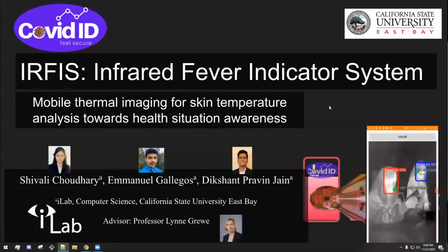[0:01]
Today, I am happy to present our findings into the use of mobile thermal imaging for skin temperature analysis. In developing the infrared fever indication system, researchers Shivali Choudhary, Emmanuel Gallegos, and Dikshant Jain, led by Professor Lynne Grewe from iLab at CSU East Bay, have developed a new tool for smartphone users to increase their situation awareness with respect to COVID-19. Before we jump into a demonstration, down below in the lower right corner, you can see an example of our system in action.
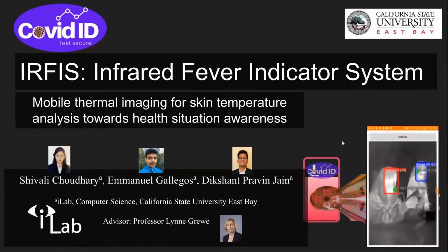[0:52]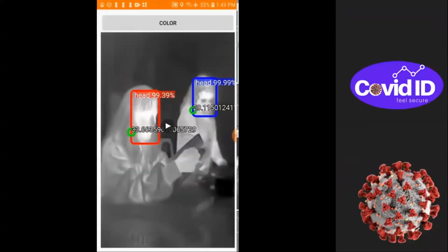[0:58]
The basic idea is to use a small infrared camera attached to the user's smartphone, which captures a live stream of infrared video, allowing our system to extract the head regions of any individuals in the frame using machine learning techniques and display the live temperature readings to the user to see if any individuals from within the frame are displaying signs of fever, one of the primary symptoms of COVID-19. This system has been integrated into the COVID ID Android application. Let's see it in action.
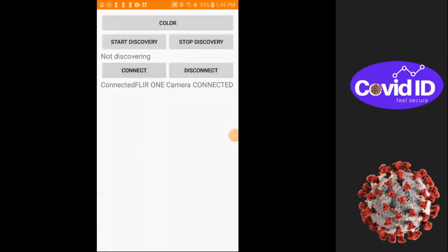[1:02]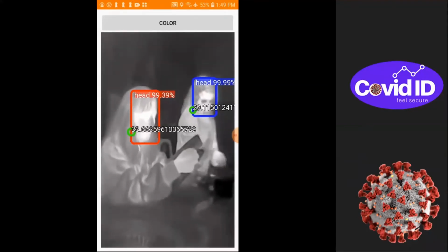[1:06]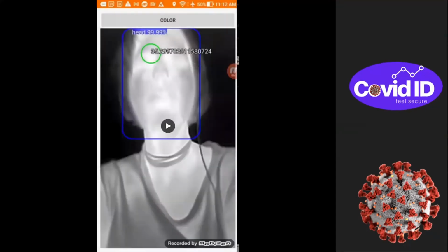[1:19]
In this first demonstration, we can see a live screen recording of the infrared fever indication system at work from the COVID ID application. The machine learning-based head detector model is determining where the head regions are, and the temperature analysis subsystem is extracting the highest temperatures found in each head region. Taking a look at another demonstration.
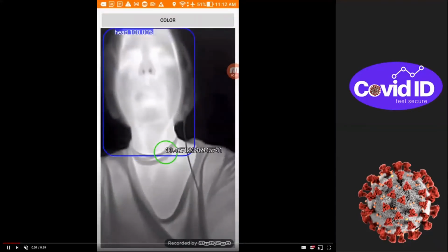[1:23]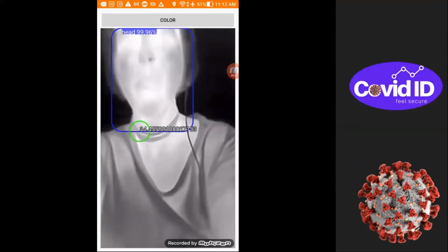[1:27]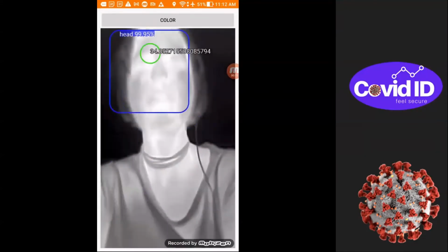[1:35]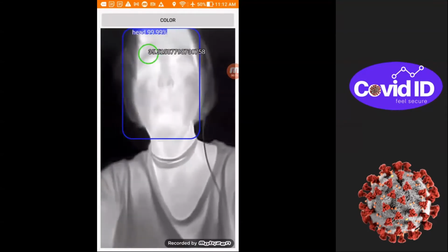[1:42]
Here we can see a close-up view of the system in action on a single individual. Note that the bounding box regions are dynamically moving and resizing as the subject's head moves. The temperature range of about 33 to 35 degrees Celsius, which is about 92 to 95 degrees Fahrenheit, falls in the range of healthy skin surface temperatures and is not indicative of fever.
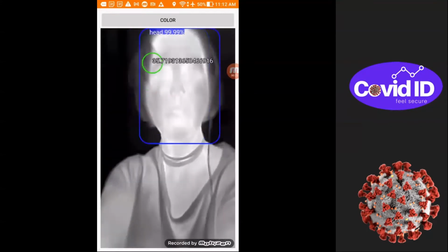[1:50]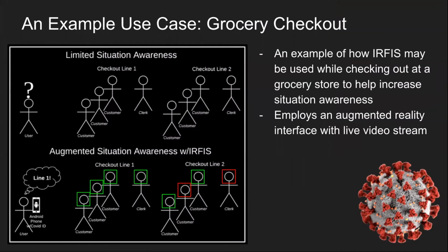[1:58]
It should be noted that this system is not meant to diagnose fever rigorously, or COVID-19 for that matter, but merely provide users with a tool to increase their situation awareness when in public spaces. Let's take a look at a possible use case.
Imagine a cautious user is at the store and wants to minimize their risk of exposure to COVID-19 at the checkout lines. Using the COVID ID Android application's augmented reality interface, the user could point their phone at each line and the system would highlight users that are exhibiting unusually high skin surface temperatures, which may indicate fever. The user could then choose to join the line with less risk. This augmented situation awareness is exactly what IRFIS was made for.
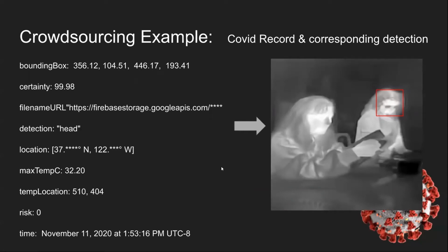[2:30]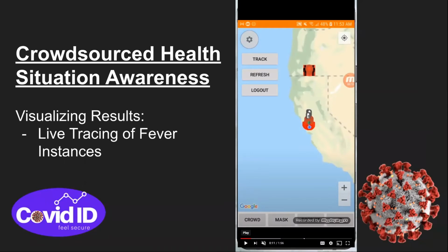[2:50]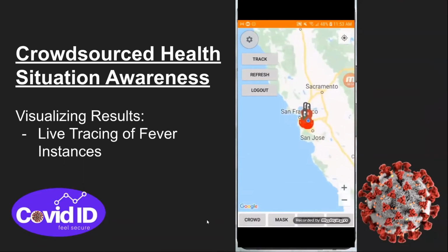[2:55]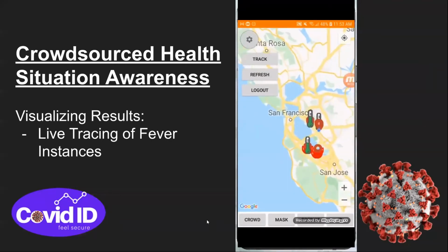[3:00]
As the user is viewing their environment, the application is also in the background generating records with data about each localized head region found, such as the time and location of the detection, as well as the max temperature found and the associated risk of a possible fever instance. These records are stored securely in a Google Firebase backend. These records are critical, as the next part of the COVID ID system involves consolidating the data from each record and using them to populate a Maps interface so that users can visualize and avoid areas of high risk.
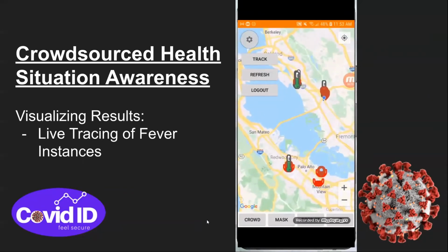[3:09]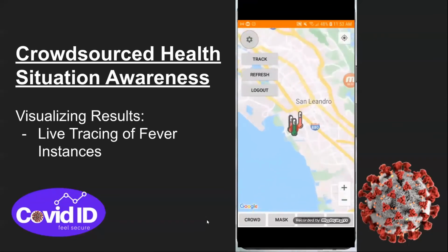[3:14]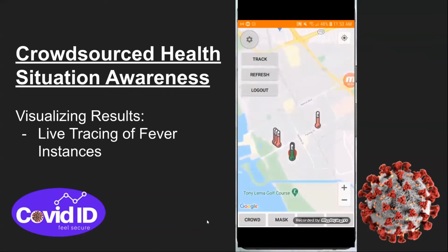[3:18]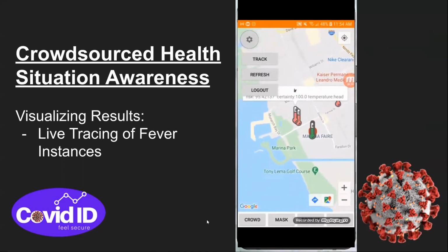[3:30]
In addition to data about possible fever instances, the COVID ID Android application also uses several other machine learning-based modules to monitor other possible COVID-19 risk factors, such as low mask usage, high crowd density, or insufficient social distancing measures. All of these records are consolidated into one Maps interface to maximize the amount of information that users can draw upon to increase their situation awareness and make safer choices.
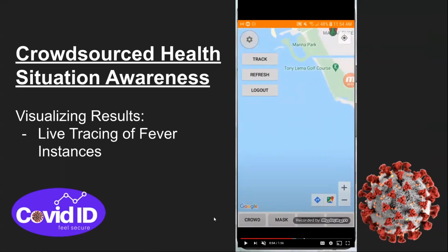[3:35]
The motivation for this project is unfortunately rather self-evident. The number of COVID-19 cases around the world is increasing rapidly, and while a potential vaccine is on the horizon, new patients are being infected every day by the potentially life-threatening virus. By giving users a tool to increase their situation awareness by preemptively detecting nearby fever instances, we hope to use one of the coronavirus's most common tells against it. Infrared sensors mounted on the common smartphone, powered by cutting-edge machine learning technologies, can hopefully help users avoid a close encounter with the virus.
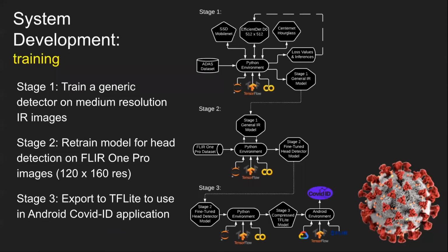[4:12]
Developing the infrared fever indication system required two primary submodules. The first of these involved training a convolutional neural network to perform head detection from low-resolution infrared images so that we could narrow down the regions to perform temperature analysis to things that we cared about analyzing, namely the human head region. We wouldn't want to perform temperature analysis on a light bulb or a heater, for instance, and falsely declare a possible fever instance in the region.
This training process was broken into 3 stages. In the first stage, several object detection models were trained on a dataset of moderate resolution infrared images as general object detectors. Preliminary models were selected based on their size, as they would have to be small enough to run from a mobile platform. Of all the tested models, EfficientDet D0 proved to be the most effective, and the trained model was passed into the second stage of training.
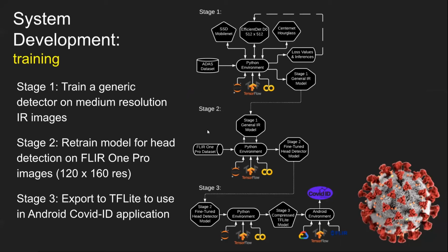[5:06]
In the second stage, the model was retrained to detect heads on a data set that the research team collected out in the field using the same FLIR One Pro infrared cameras that would be used on the deployed Android system. The head detector system was rigorously tested and found to have high accuracy, with an average precision of 95.6% and an average recall of 80.2%. In stage 3, this tested model was then exported to a compressed TF Lite model, which could then be integrated into the COVID ID Android application to help perform live temperature analysis.
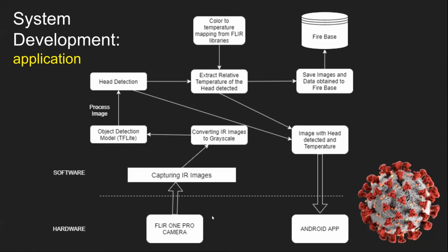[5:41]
Here you can see a system diagram of how IRFIS runs from the mobile platform. First, the Android-mounted FLIR ONE Pro camera captures a stream of live infrared images. These images are converted to grayscale images and passed into our integrated head detector model. The head detections are then passed to the temperature analysis subsystem, which extracts the highest temperature found in each head region. These records are then passed to the Google Firebase backend, where they can be used to populate the maps interface we saw earlier. Additionally, those same head detection regions, along with the temperature and risk information extracted, are used to provide the user with a live video feed to visualize possible fever instances around them from within the COVID ID Android application.
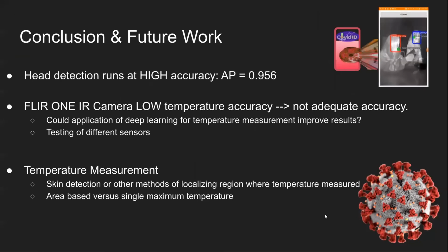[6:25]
In conclusion, the infrared fever indication system head detector model runs with extremely high accuracy, serving not only as a robust head detector, but also as a proof of concept for other infrared mobile machine learning-based object detection systems with applications in a variety of fields, both medical and non-medical in nature. Unfortunately, the FLIR ONE Pro cameras used to collect live temperature data have inadequate accuracy for properly diagnosing fever. Possible solutions to this problem could be using further applications of deep learning on the temperature measurement data to potentially correct for the inaccuracies of the sensor and improve results, or testing the system with different sensors altogether.
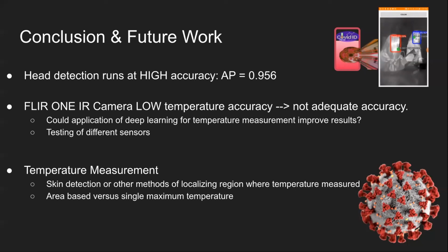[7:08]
Additionally, further techniques such as skin detection could be used within the bounding box regions to remove possible interference from other parts of the scene that are not a part of the head, making a more robust region for analysis. Lastly, rather than simply extracting the highest temperature found in a region, perhaps a more complex type of analysis, such as an area-based analysis rather than a pixel-by-pixel analysis, might improve performance.